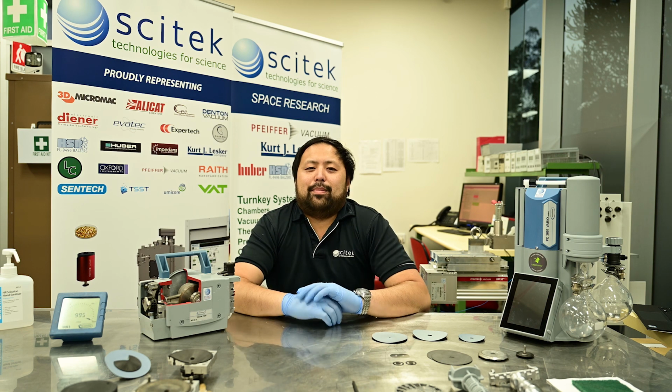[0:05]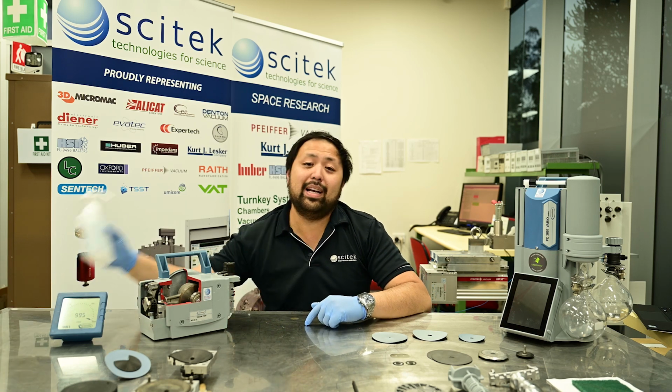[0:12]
I hope you are all keeping safe amongst COVID-19 and keeping plenty of hand sanitizer ready, just like we are.
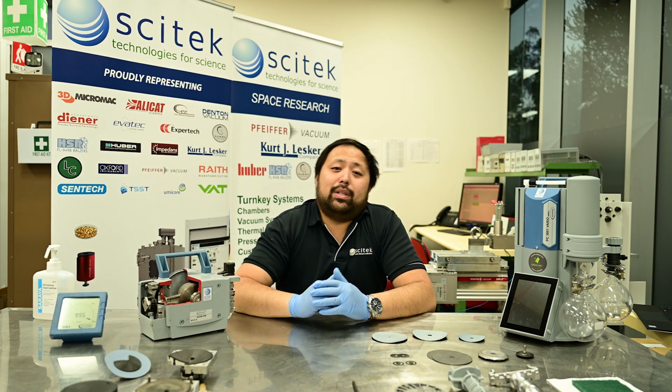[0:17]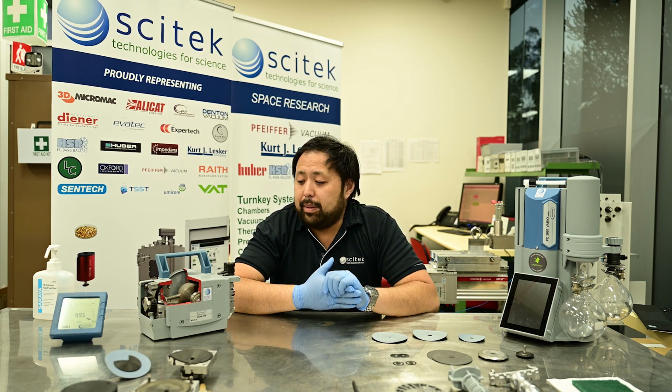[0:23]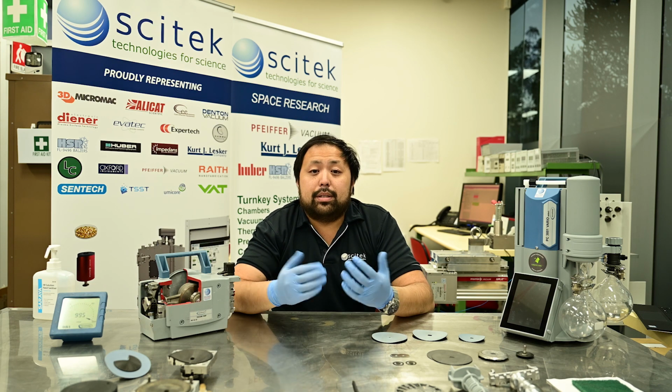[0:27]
Today, I'm going to be talking to you about diaphragm pumps. Now, these pumps are one of the most commonly used in the industry, and we see plenty of them in the service department. They're quite easy to service if you know what you're doing, so today I'm going to give you a few tips about servicing them, as well as just going through the different types of pumps you're likely to see in your lab.
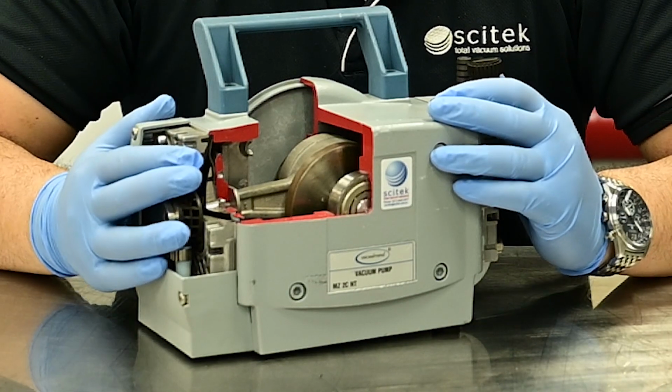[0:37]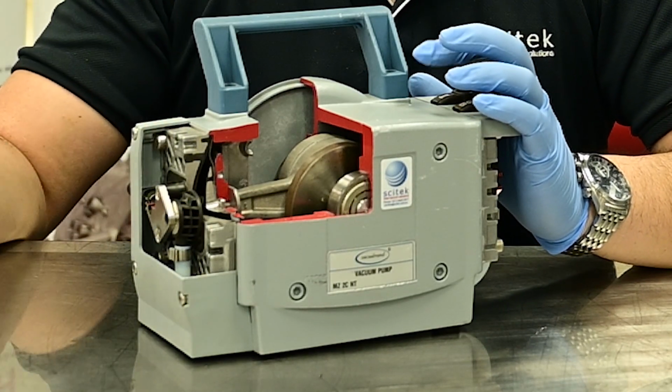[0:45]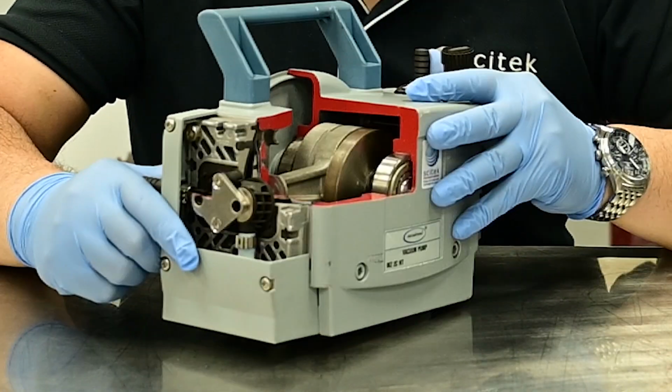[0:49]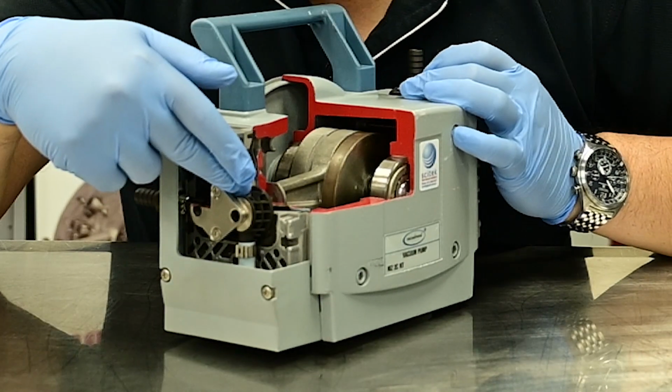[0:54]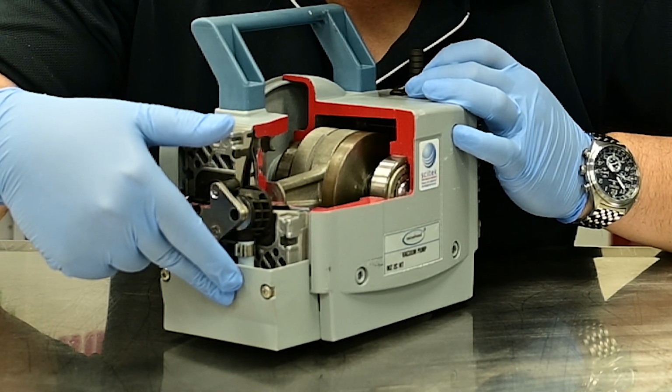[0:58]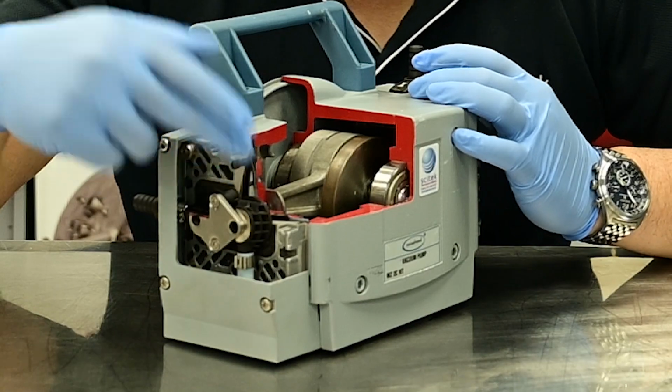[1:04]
So a diaphragm pump is very much like your car engine. It essentially has a reciprocating piston, which then pulls air in or other gases in and then pushes it out through the exhaust. Here I've got a cutaway model, which helpfully shows us how this all works. So down here, you've got your inlet diaphragm, your inlet valve, and then your exhaust valve behind here. These valves are essentially one-way valves, so they will only let gas flow through in one direction.
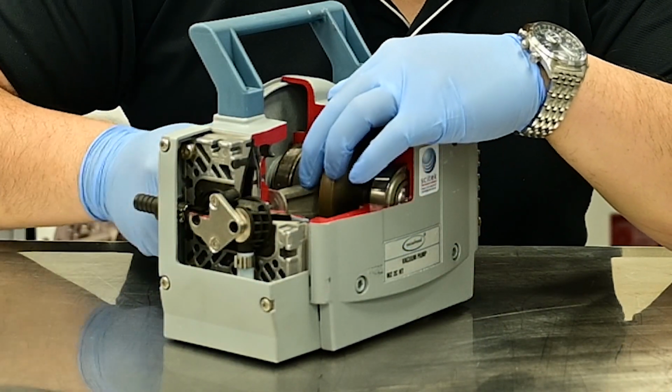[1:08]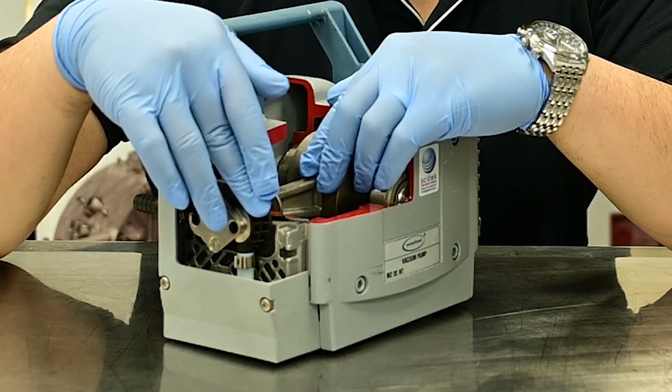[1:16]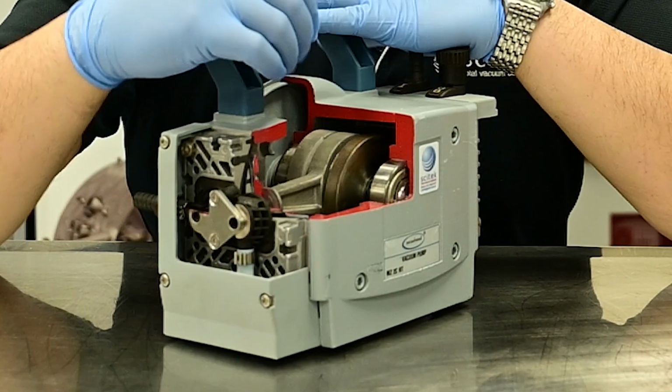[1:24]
So in a pumping cycle, the diaphragm will pull in, it will pull gas through the inlet valve, and then it will reciprocate back upwards, at which point the inlet valve will now be closed, and then the gas will pass through to the exhaust. Like a car engine as well, you can have multiples of these diaphragms in order to improve pumping speed as well as ultimate vacuum performance.
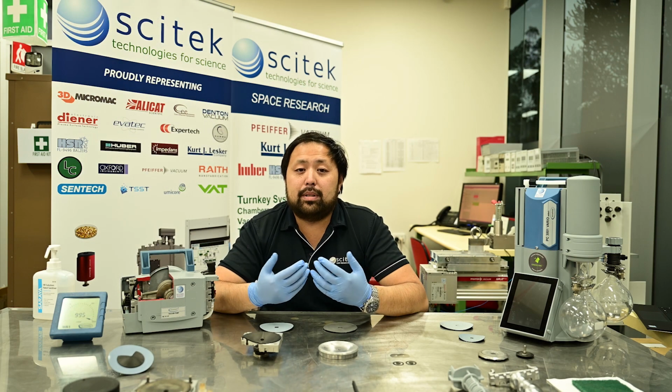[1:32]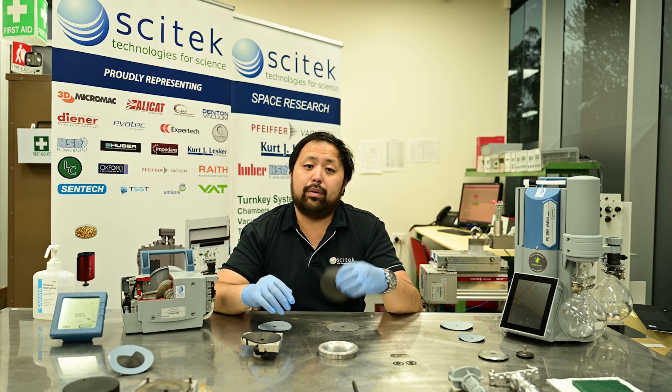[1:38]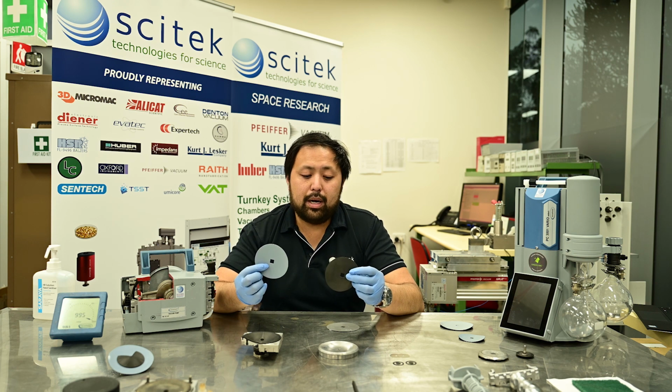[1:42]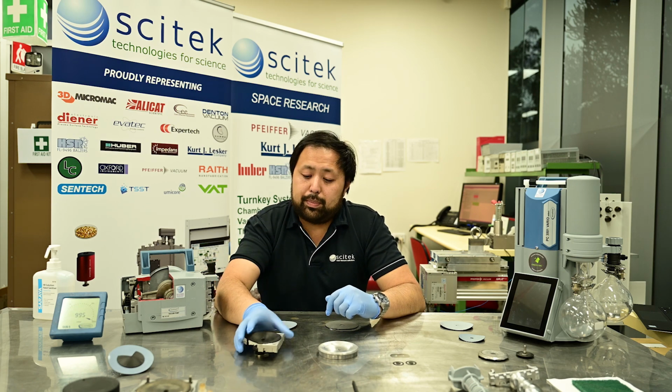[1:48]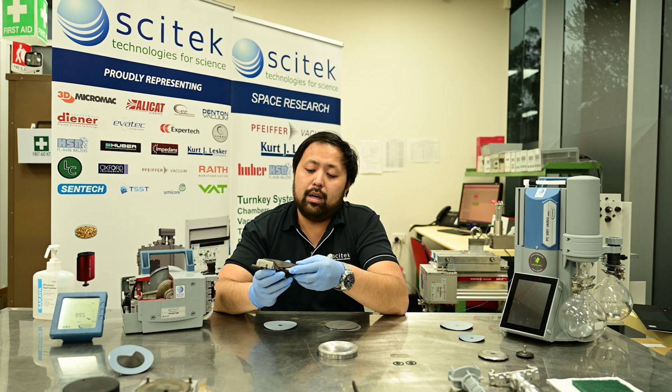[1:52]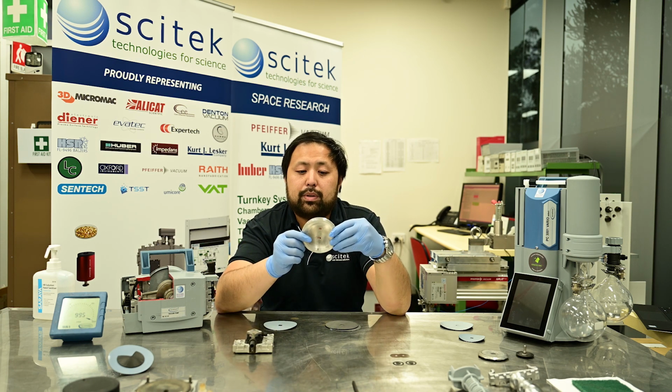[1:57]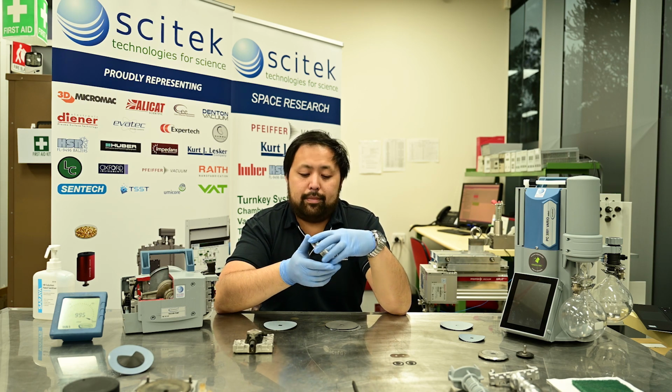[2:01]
Now, diaphragm pumps typically come in two distinct types. You've got your chemistry rated diaphragm and your non-chemistry rated diaphragm. Now, these two are the same shape and same size, but the chemistry one has got a PTFE coating on it. In addition to that, chemistry series pumps also have a polymer coated lining on the inside, which stops it from being attacked by chemicals and solvents. Whereas the non-chemistry, as you can see here, is just raw aluminium, so it would be subject to attack.
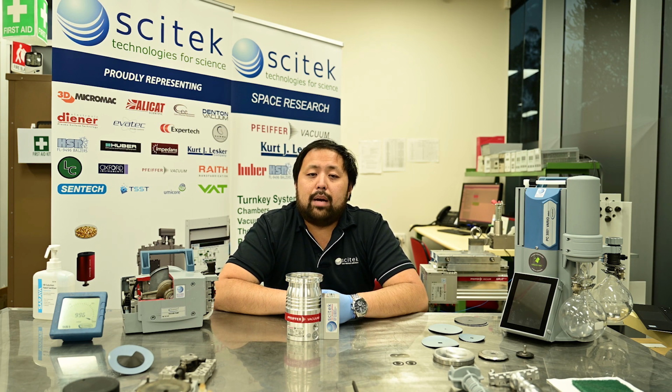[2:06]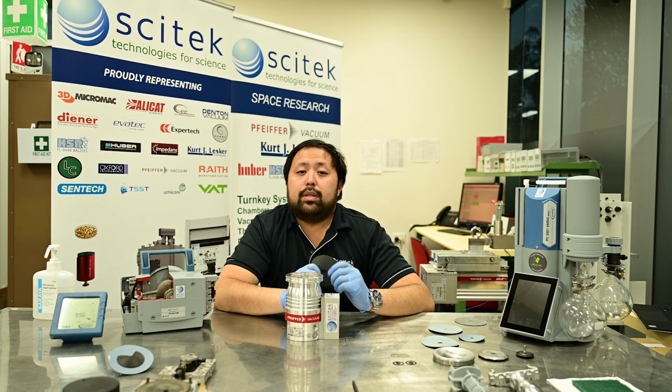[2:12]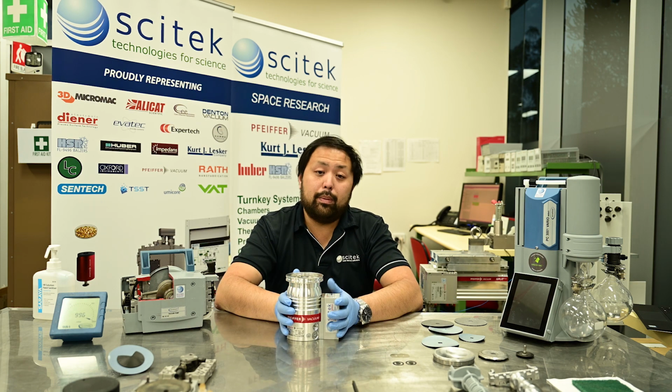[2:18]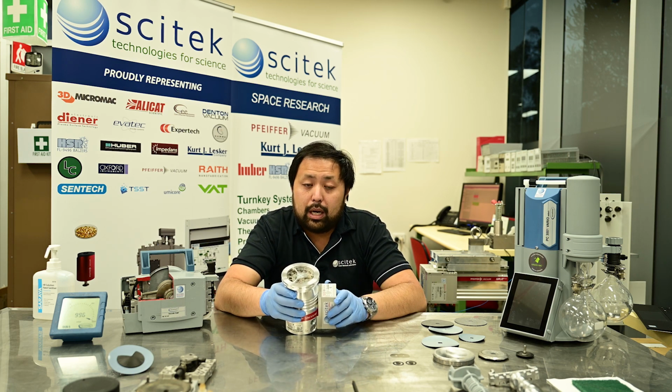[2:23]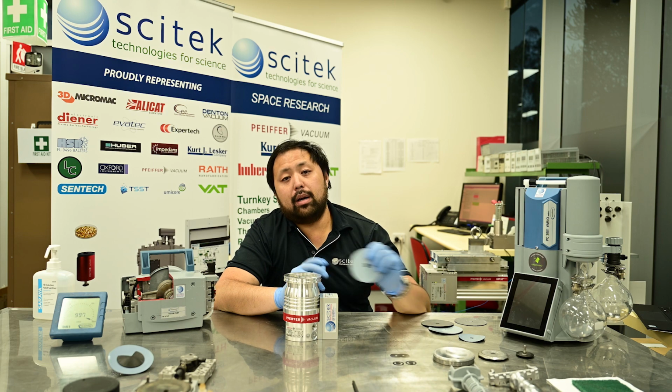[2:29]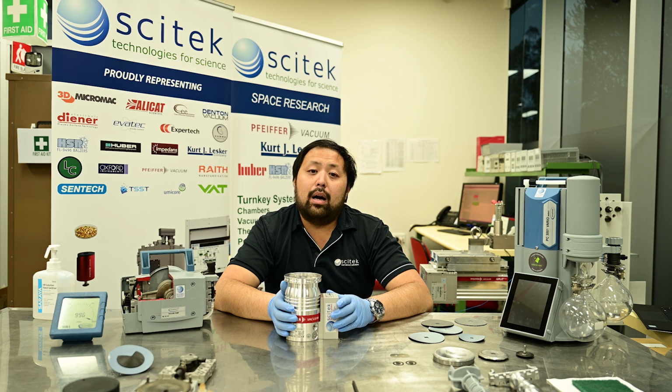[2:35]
Now, these two different types of diaphragm pumps have two very different applications that they can be used for. The non-chemistry diaphragms are best used in applications where they're not likely to see solvents or high levels of moisture, for instance, backing turbo pumps, and also for vacuum storage and for just clean chamber applications like space chambers. Now, your chemistry rated diaphragms, they are well suited for working with rotary evaporators, for filtration systems, for solvent purification systems, anywhere where they're likely to see high levels of moisture or chemicals.
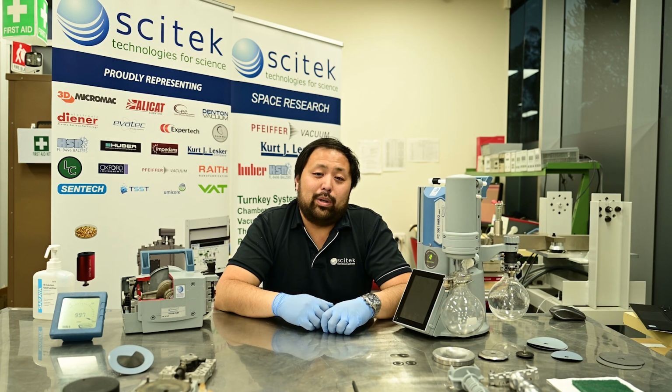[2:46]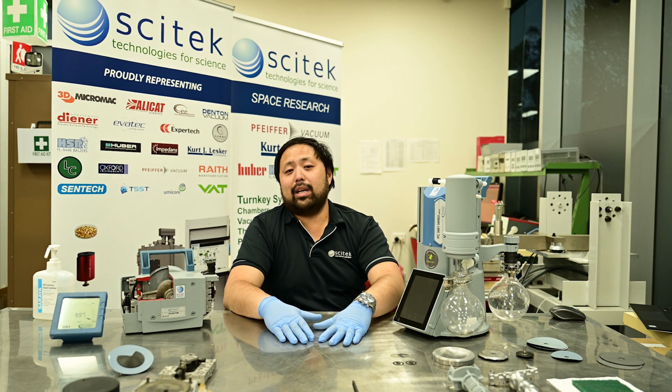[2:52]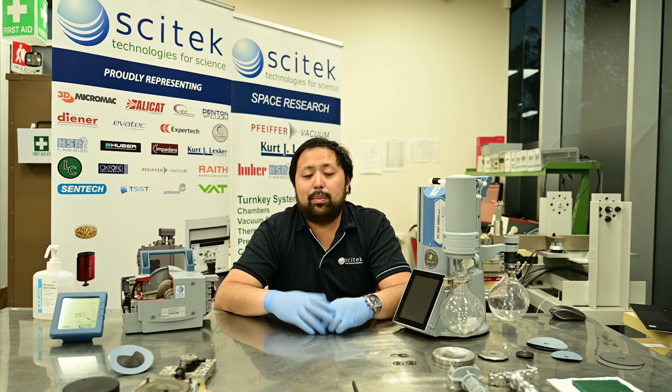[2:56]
So based on the fact that you're watching this video, I'm going to assume that you've got plenty of diaphragm pumps in your lab. One of the most commonly asked questions I get is, why is my vacuum pump not pulling down the way it was when I bought it new? What can I do to keep the performance going? So here are a couple of tips that I've got that'll help you make sure that your Vacuubrand pumps continue to work as well as they were on the day that you bought them.
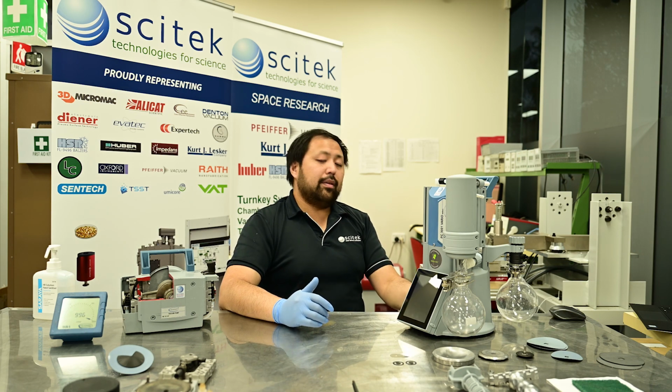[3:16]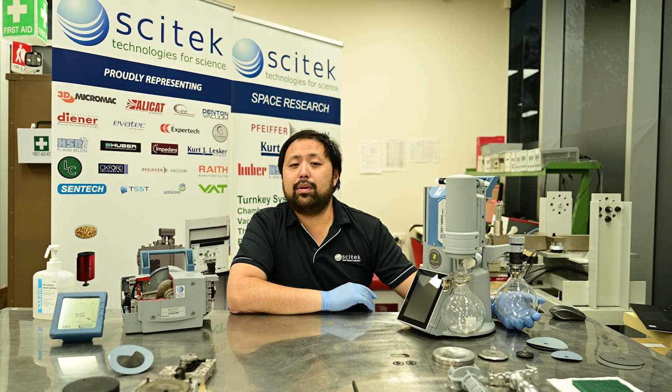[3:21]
Inlet traps are a helpful addition to your diaphragm pump, particularly if you're using it with chemistry. As you can see here from this PC3001 Vario, the inlet trap is essentially a glass flask that sits on the inlet. Now, what this does is that it traps any liquids or particles that might make their way through and into the pump. This stops the pump from getting damaged by liquids and particle ingress, and also improves the efficiency of the pump, as it means that the pump doesn't have to push through liquids and can just focus on pushing through the gases. Thereby, it is able to reach its ultimate vacuum much more quickly.
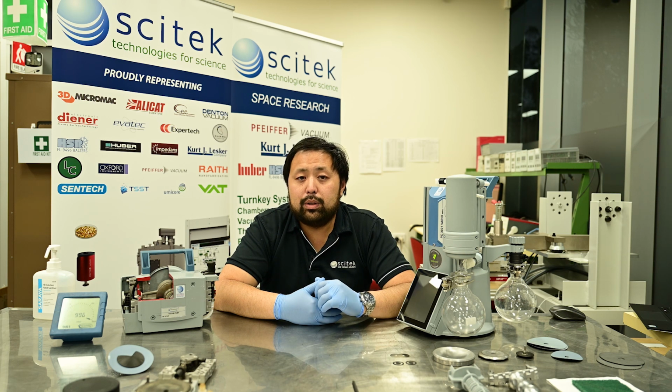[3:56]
Now, one commonly overlooked item which often causes issues with diaphragm pumps is the exhaust tubing. If your exhaust tubing gets blocked either by contamination or just by a simple kink in the line, this can cause undue stress to the rest of the pumping system, damaging diaphragms and possibly even tearing valves. So it's always worth inspecting your vacuum lines periodically to make sure that there is no blockage on the exhaust, and this will help your pump work at its best efficiency.
Now, I know it's tempting to go in, turn on your rotary evaporator and start running your pump straight away, but one really important thing that you should always do is to run your vacuum pump for at least 30 minutes prior to starting your application.
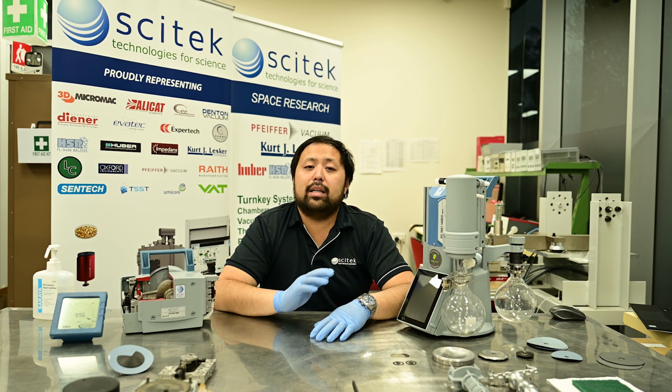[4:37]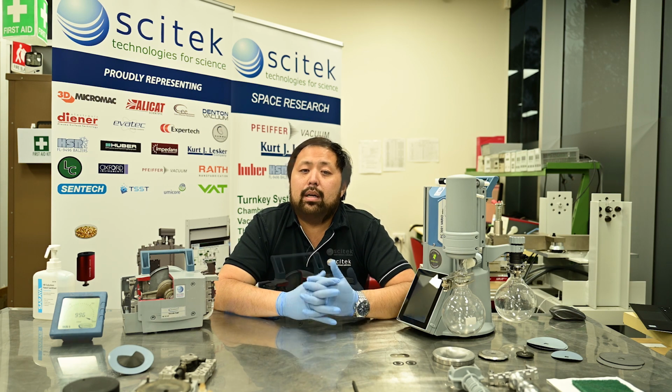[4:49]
What this does is that it warms up all the internal surfaces of the pump, which means that chemical vapors are less likely to condense on the surfaces and damage the surfaces. Additionally, if you run the pump for 30 minutes after your application, this will have a self-cleaning effect and therefore also help remove anything that might have ended up inside the pump.
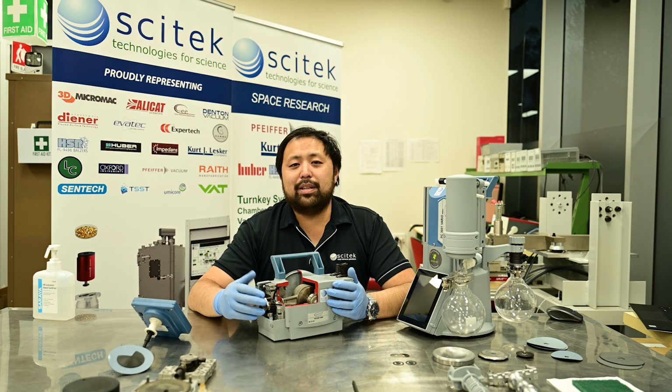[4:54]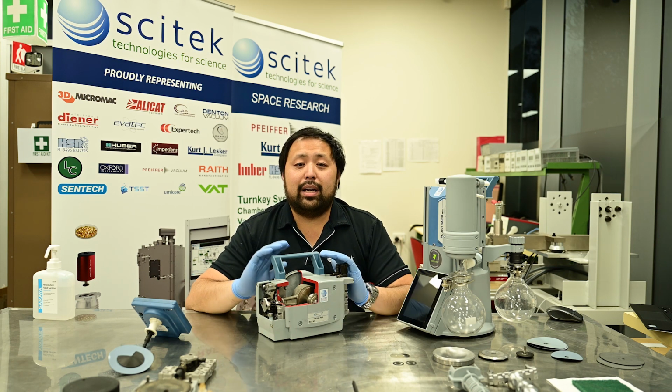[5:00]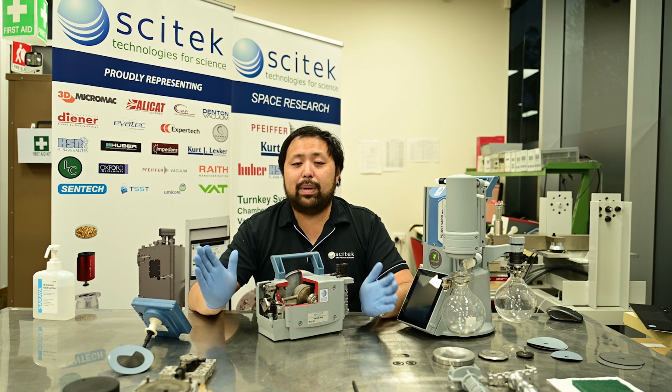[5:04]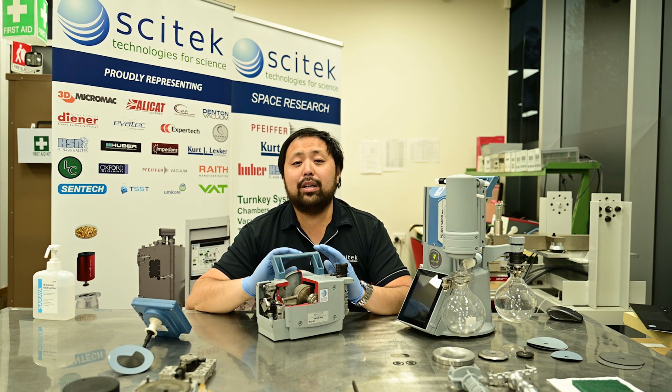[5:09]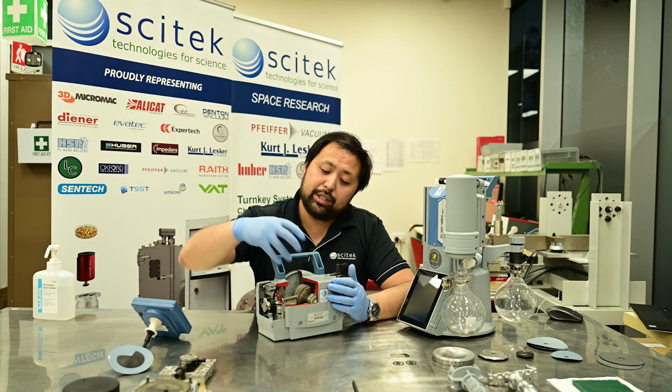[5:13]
Diaphragm pumps, like your car, require regular maintenance and inspection to ensure that they can continue performing at their best. I know it's very easy to just ignore them, leave them underneath your fume hoods, leave them underneath your benches, and assume that they'll run forever, generating infinite vacuum. But what actually happens is that they break down and allow solvents and chemicals to leach into the spaces in here, which can cause irreversible damage to your pump.
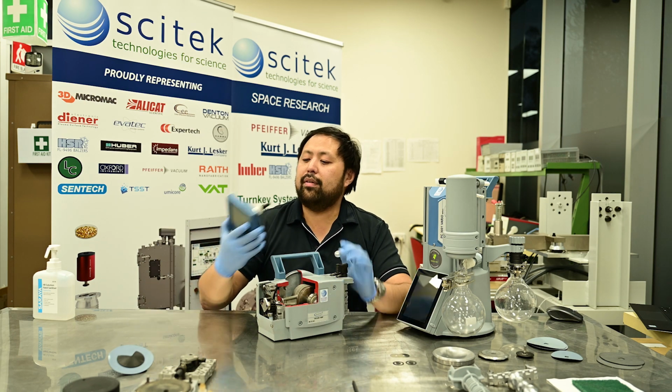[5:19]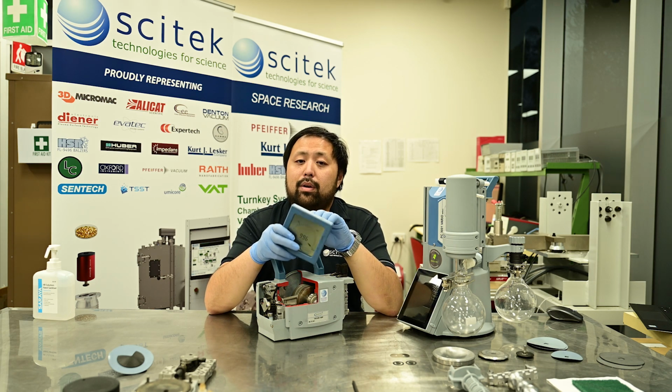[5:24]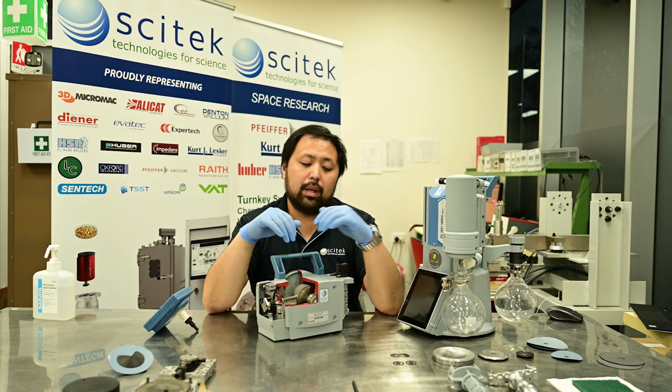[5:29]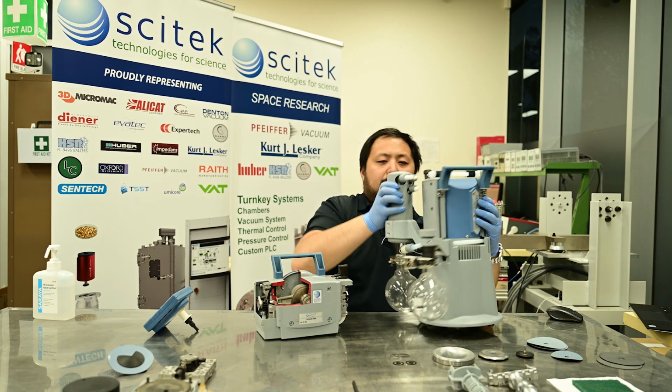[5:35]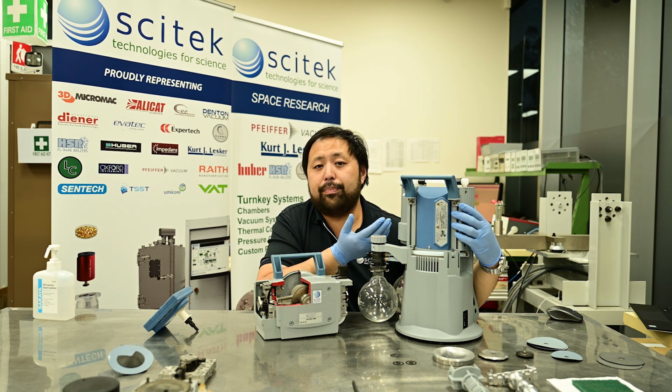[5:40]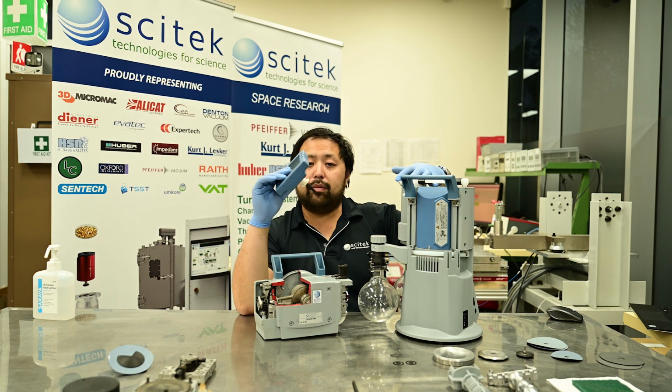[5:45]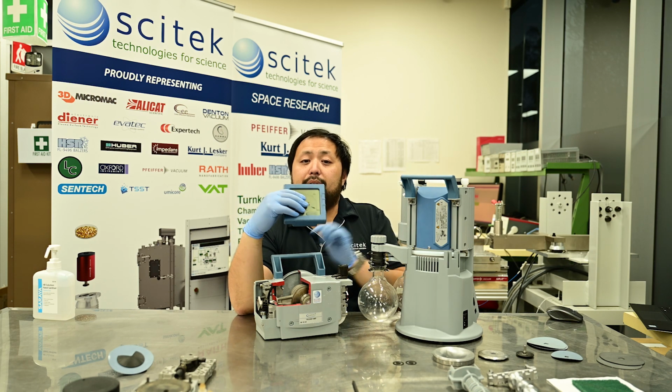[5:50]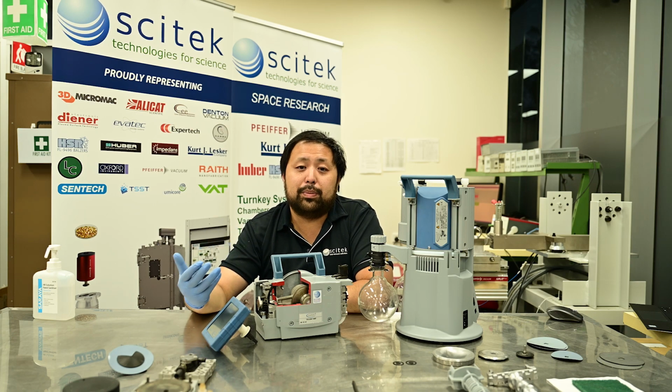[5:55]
It's always important to have a vacuum gauge, as this is the easiest way to determine how healthy your vacuum pump is. Now, with all the Vacuubrand diaphragm pumps, they will have a label on the front of them, like here, and over here, which will show you what the specification is for the ultimate vacuum. The easiest thing to do is to connect up your vacuum gauge onto the inlet of the pump, run the pump, and see if it is able to reach its ultimate vacuum. If it can't reach this ultimate vacuum, then it means that you've got a problem and that you need to address it as soon as possible.
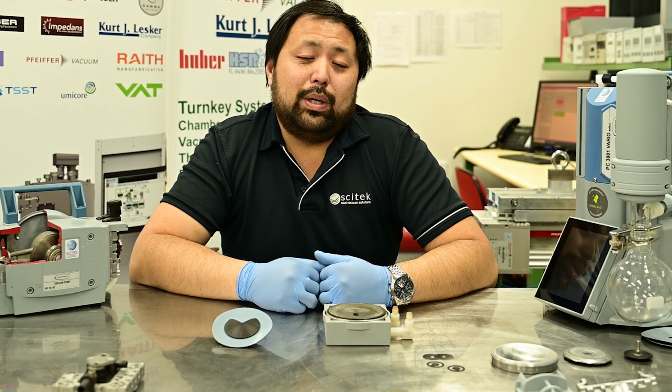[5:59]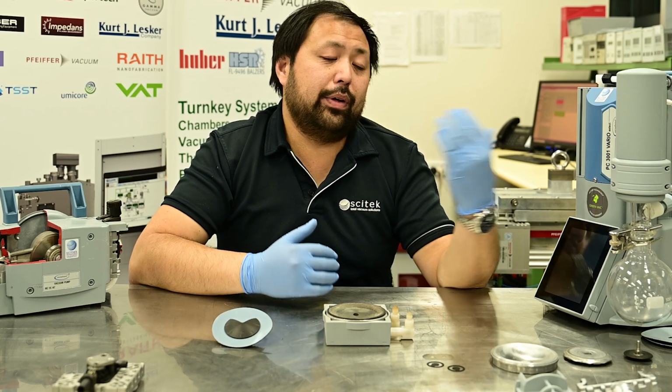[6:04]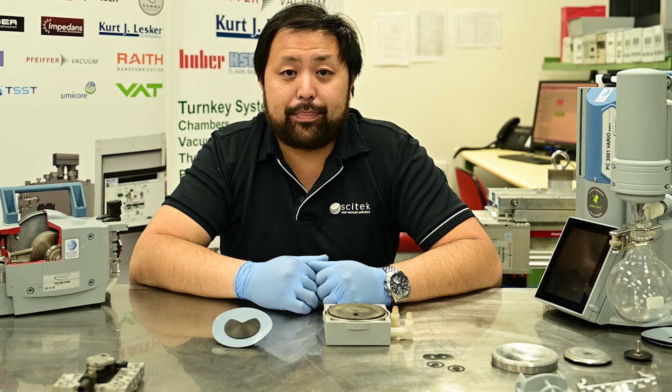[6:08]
So your pump isn't reaching ultimate vacuum. What can you do? Well, I can sell you a new pump, but that's probably not the most economical way to go about spending your lab's money.
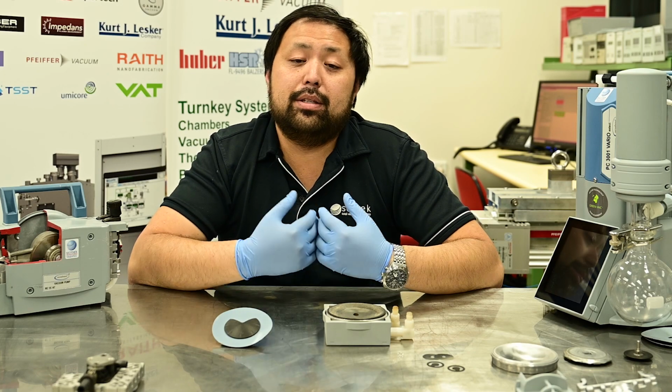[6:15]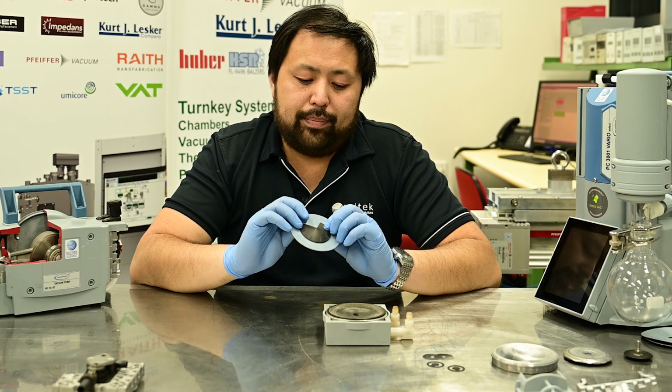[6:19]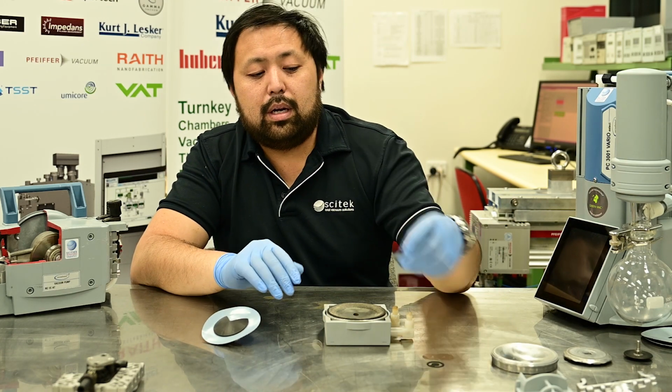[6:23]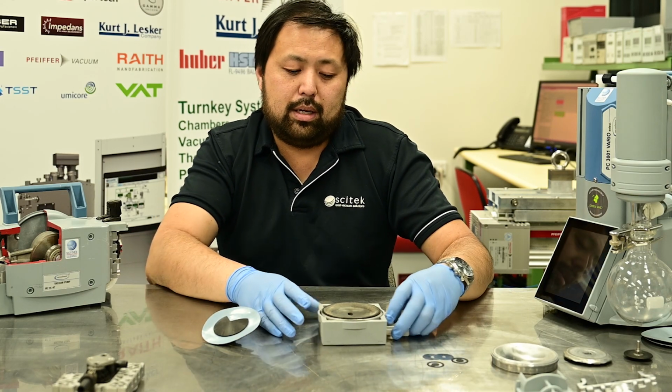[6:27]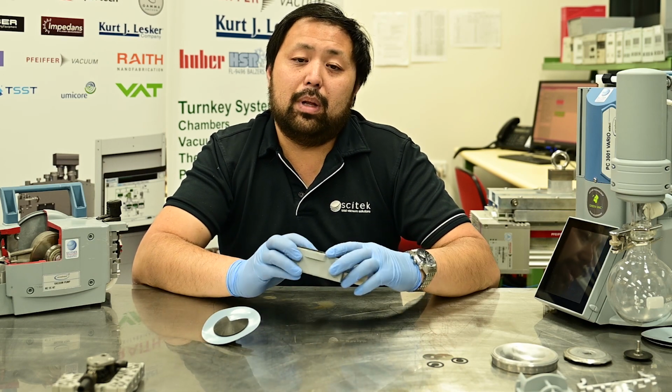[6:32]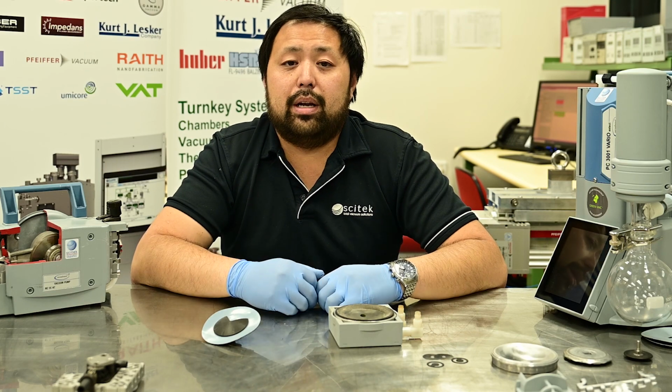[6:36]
Now, firstly, we need to identify what could cause the lack of performance. And this is usually generated by a few things. One, tears in your diaphragm. Two, torn valve. Three, blockages in your vacuum connections and vacuum lines. Or four, your pump is simply just dirty on the inside, which fills up the headspace and causes the pump not to work efficiently.
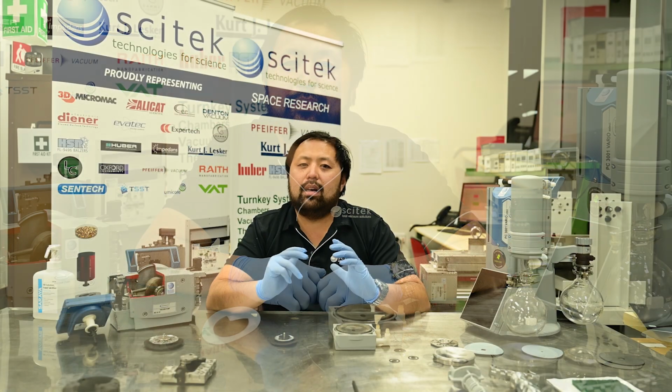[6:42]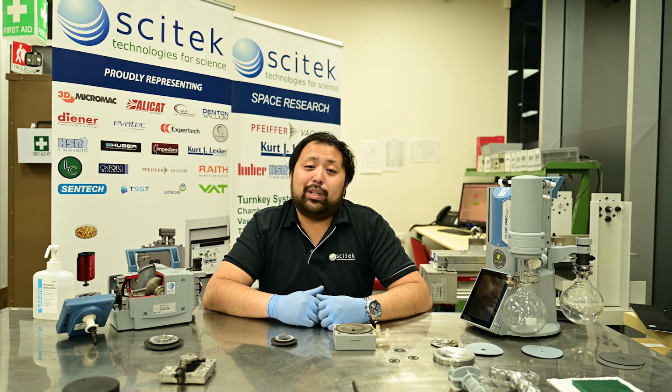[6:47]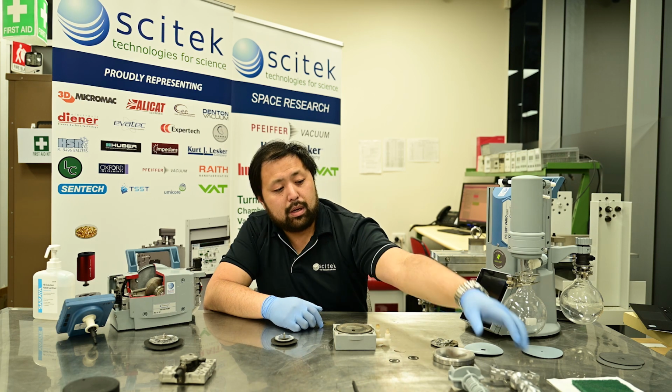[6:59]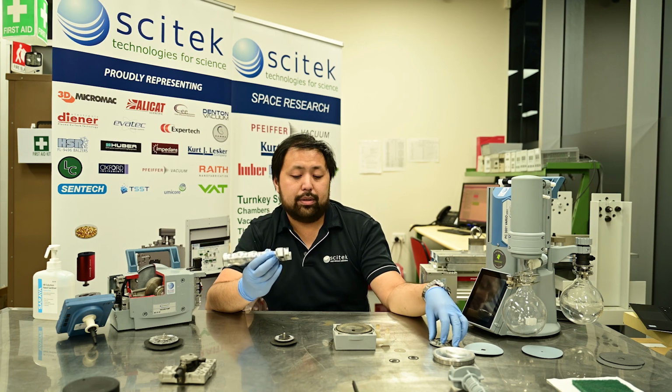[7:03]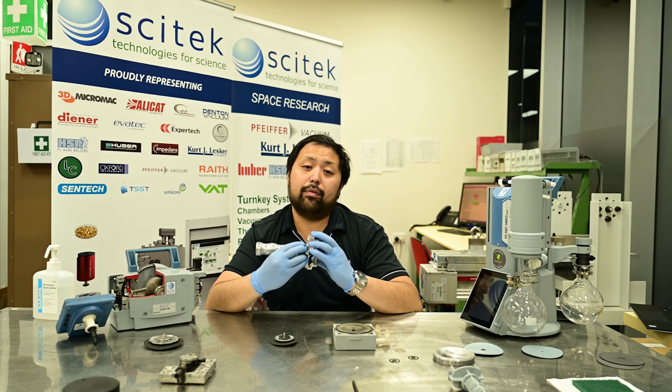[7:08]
Now we finally reached the part of the video which I'm guessing is why you started watching in the first place. How do you service your diaphragm pump? Servicing diaphragm pumps is not particularly complicated. It just takes a little bit of time and patience and a couple of tools. For starters, you'll need a diaphragm wrench. Now this goes around the outside of the backing plate of the diaphragm and allows you to remove it from the head.
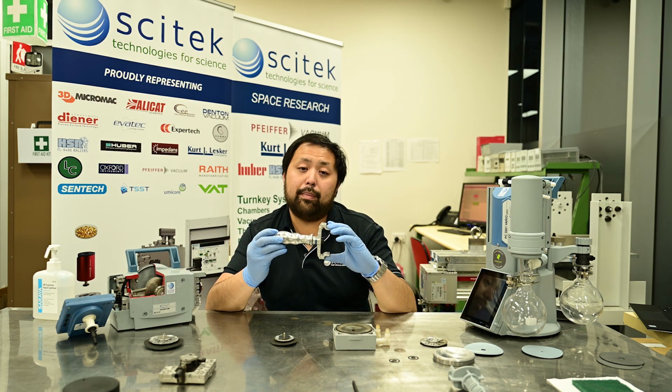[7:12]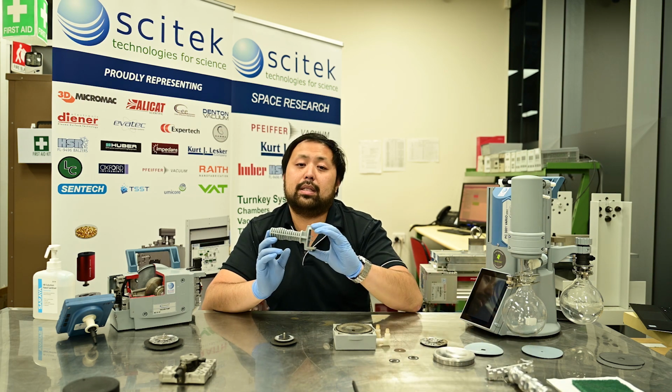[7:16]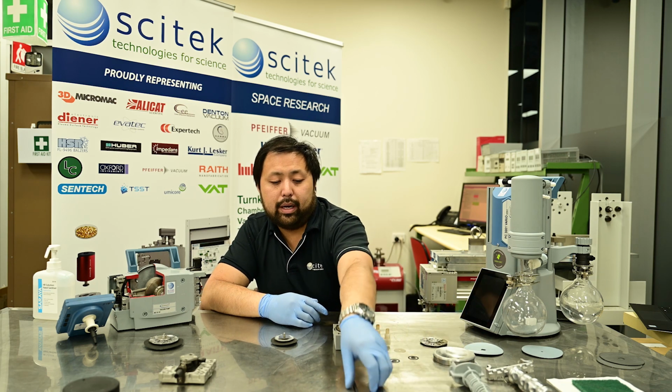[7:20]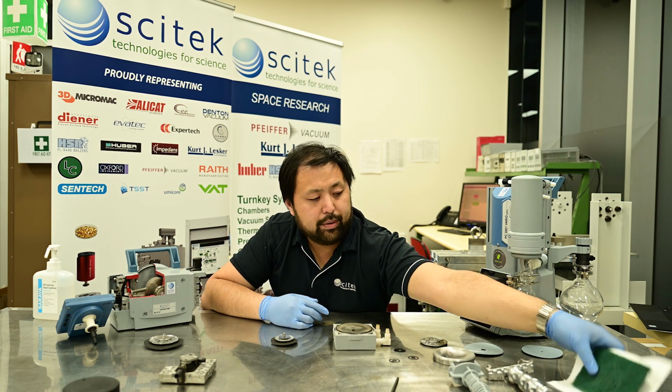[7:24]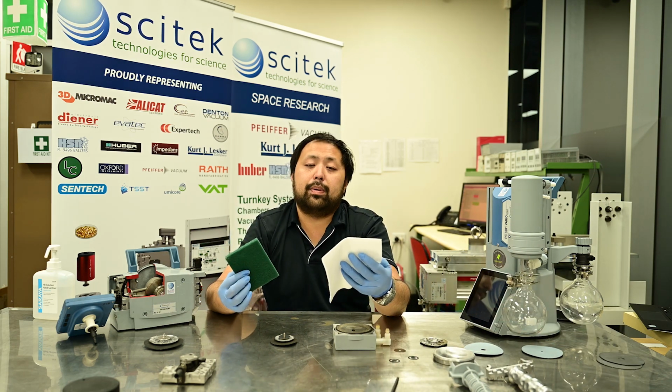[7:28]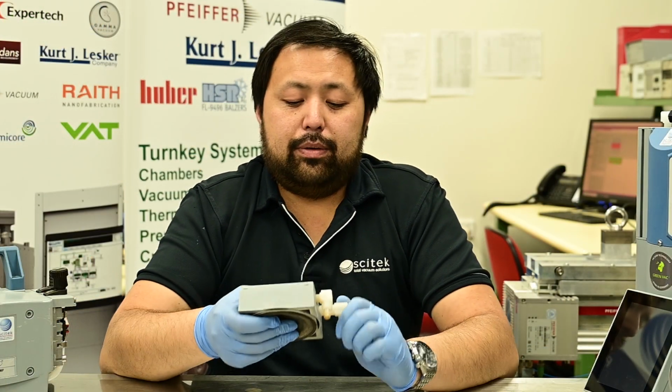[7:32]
Now they come in both a metal type for the larger pumps and a plastic version for the smaller pumps. Other tools that you might need are the Allen key and also some lint-free towels and some Scotch-Brite. On the older style pumps, at this point you'll need to remove the vacuum fittings in order to give you access to the valves.
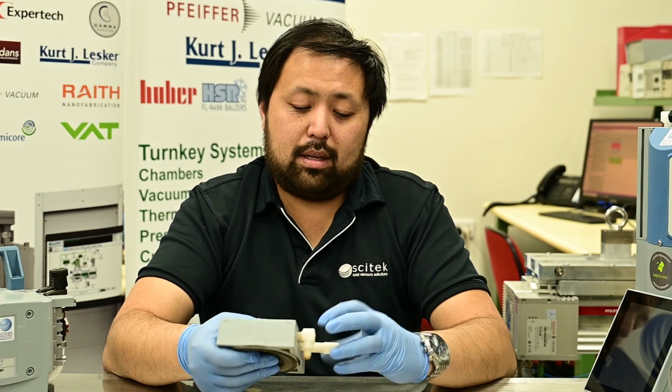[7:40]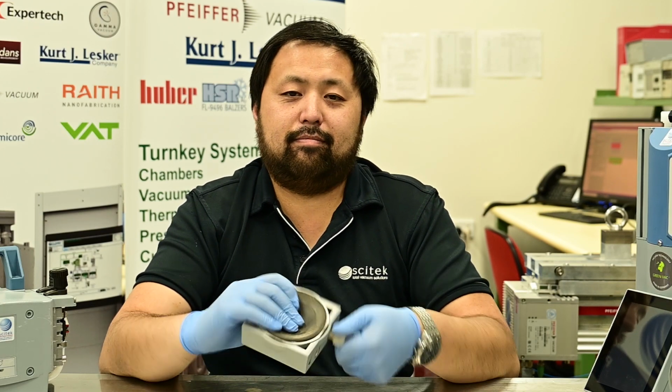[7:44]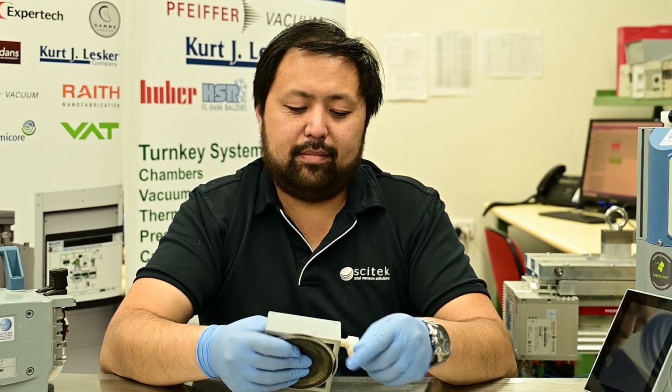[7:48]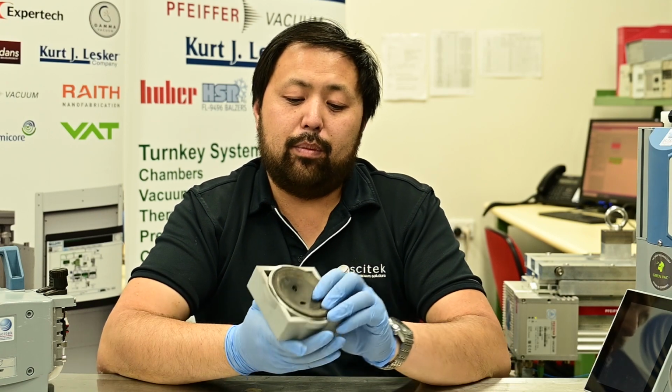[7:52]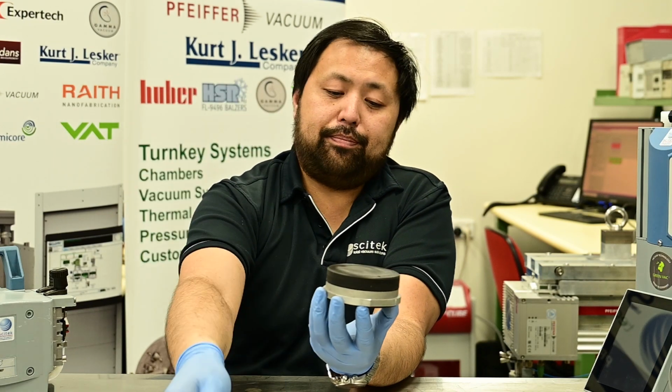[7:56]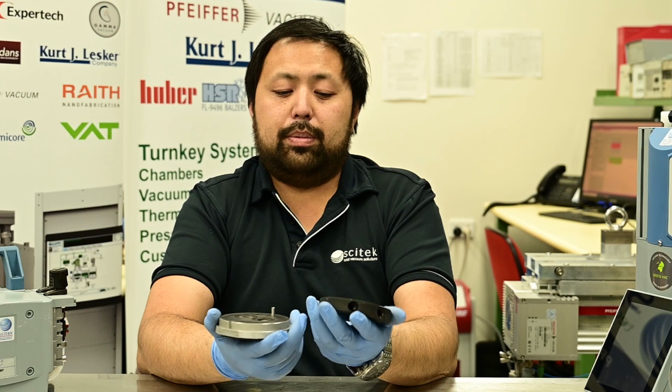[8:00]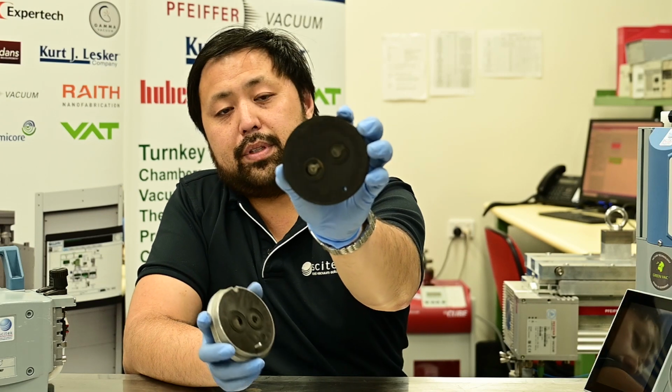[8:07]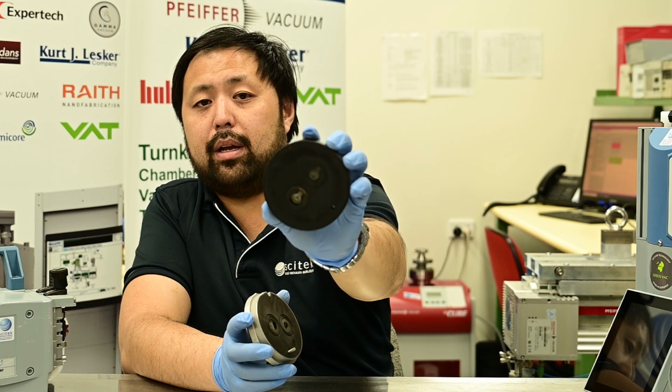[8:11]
Now it's always important to keep track of which fitting came from where. When those fittings are off, you can remove the cover and then you can separate the two plates of the head. As you can see here, this is a pump that is requiring service. You can see the valves are used and you can see that they've actually deformed quite significantly. Once you've removed the valves,
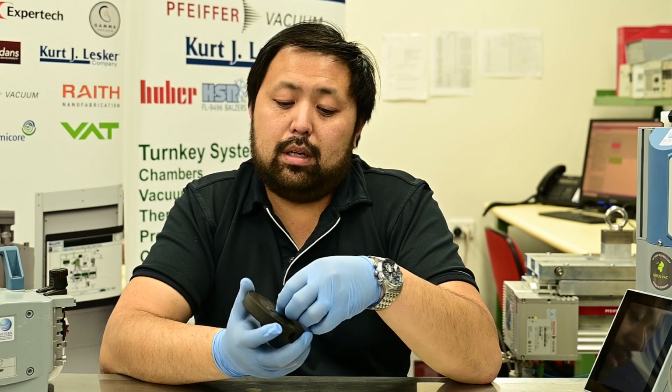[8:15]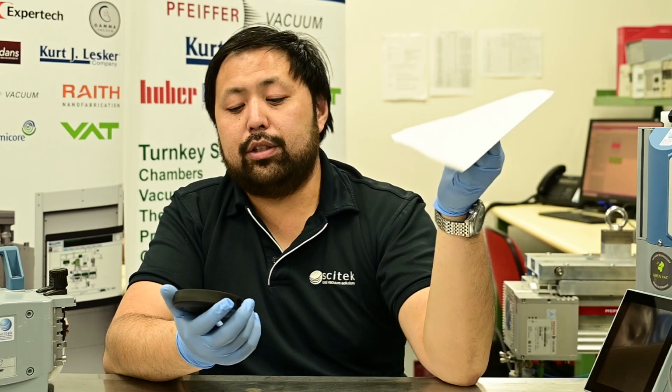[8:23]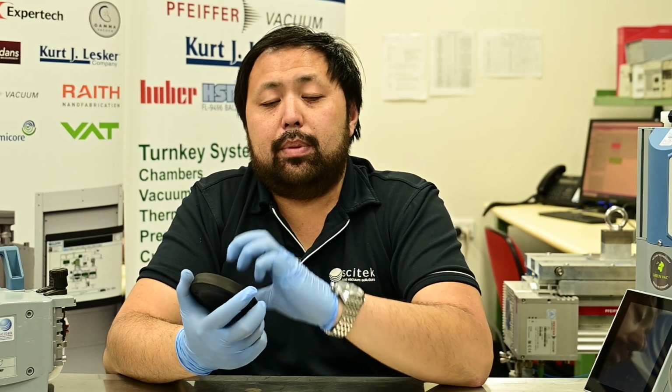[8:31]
you can give the entire surface here a clean with some isopropanol. Now, it's best to start off by using just a paper towel to wipe it off, and only when you get to a point where you've got hard deposits, then to use the Scotch-Brite. It's important to use the Scotch-Brite gently because you do not want to damage the surfaces.
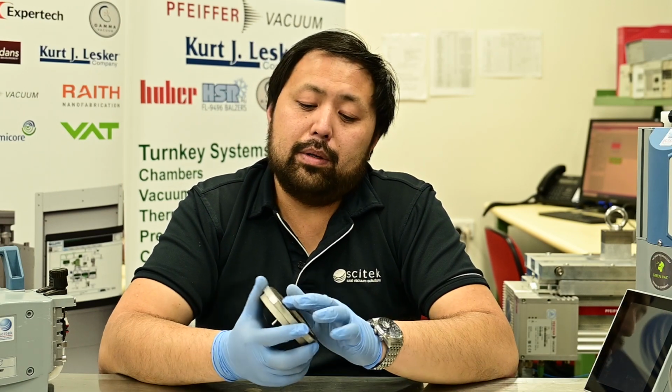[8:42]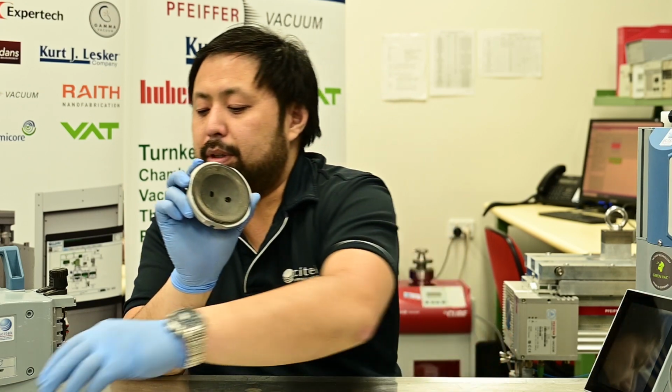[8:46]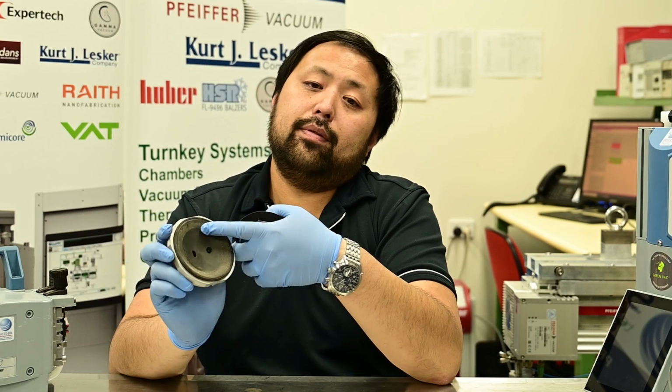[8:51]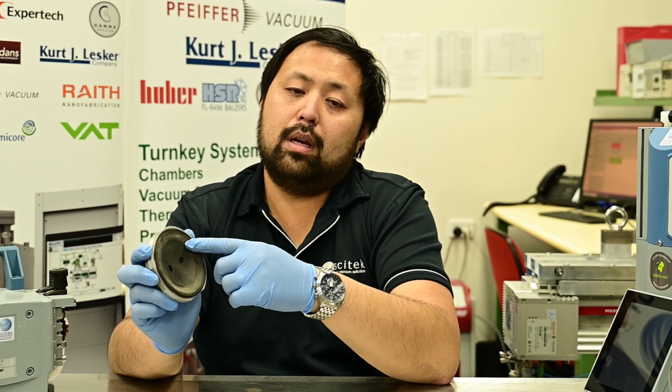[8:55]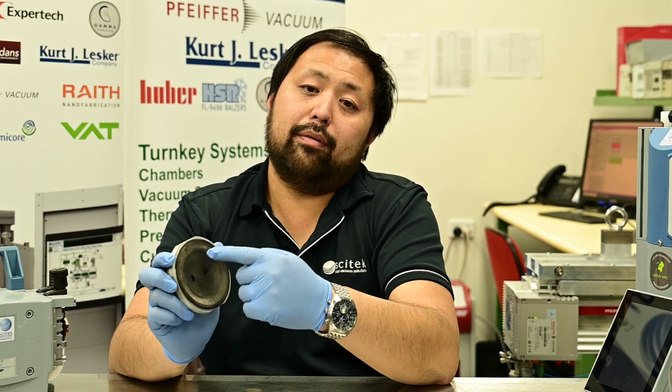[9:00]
Now, a common area for deposits is on the inside face of the head. Now, this is the face which makes contact with the diaphragm. So you can see from this one that you get a lot of residue on the inside face. One other thing to also check is that these inlet and exhaust ports are clear and free from any debris.
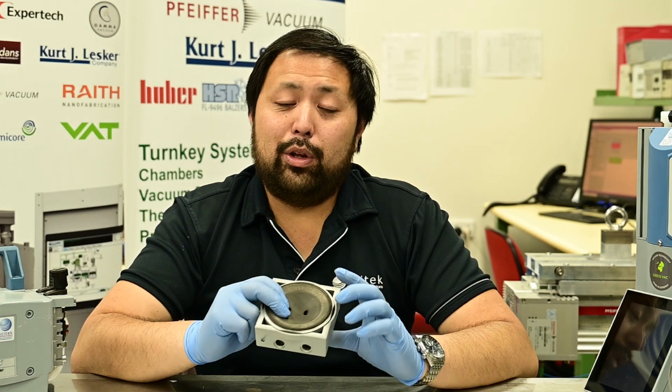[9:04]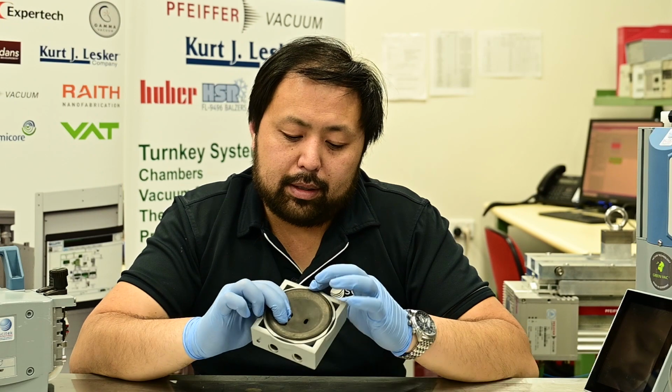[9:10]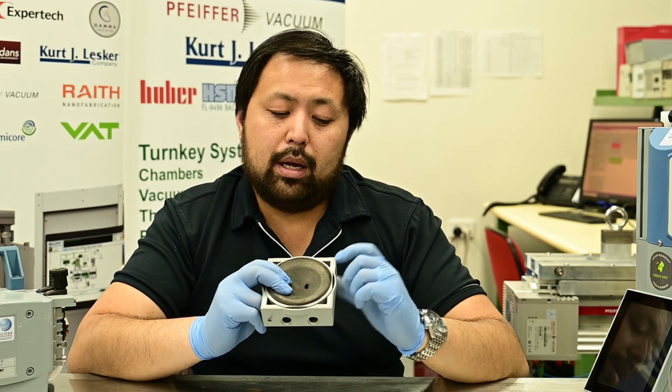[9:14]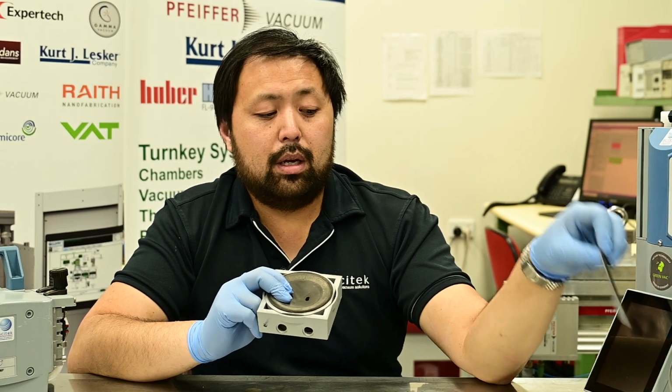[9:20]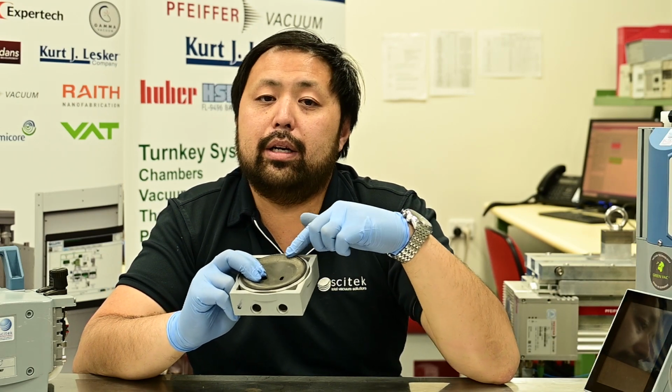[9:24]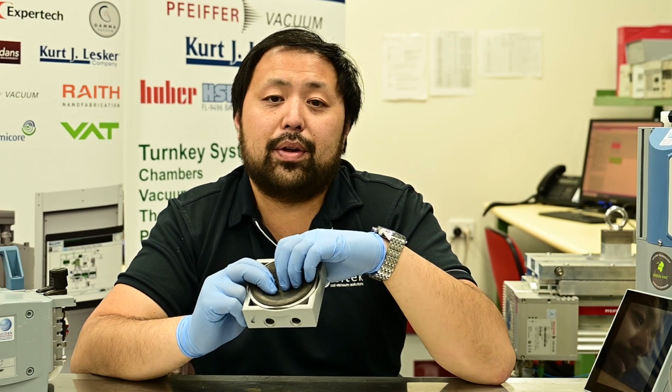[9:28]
One thing to remember when you're cleaning the pump, particularly if it's really dirty and you need to get at it with the Scotch-Brite, is this slight ridge you see on the outside ring of the head. This ridge is actually what clamps onto the diaphragm and creates the vacuum seal. So when you're trying to clean this area, make sure you do not damage that or polish that area too much. Otherwise, your pump will leak and it won't be able to achieve its ultimate vacuum.
Once you've got the tool engaged in the backing plate of the diaphragm, you can rotate counterclockwise.
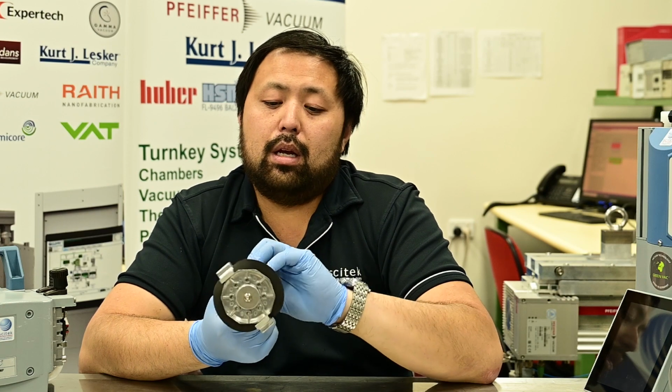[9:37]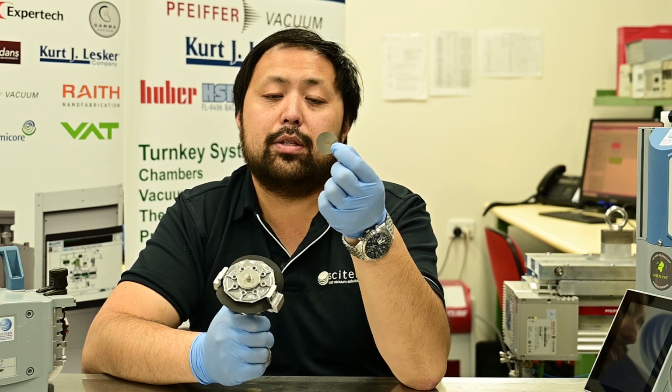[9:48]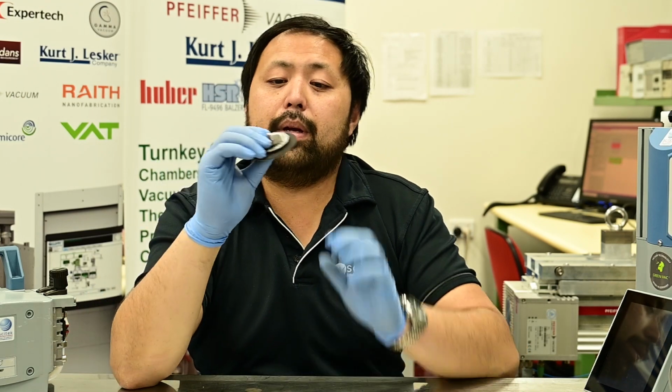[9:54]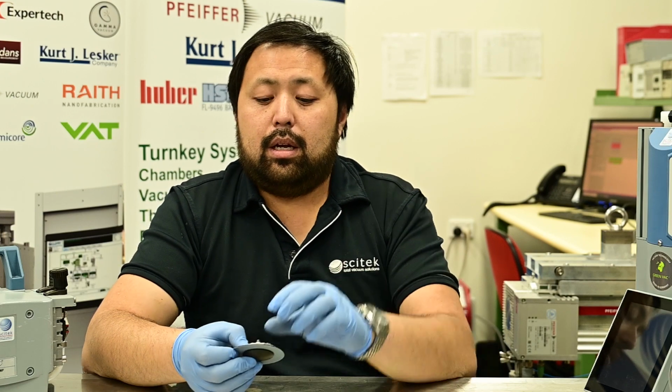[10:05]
When you have it off, just ensure that you retain the spacers. Most pumps will have at least one or two of these very thin spacers to allow the adjustment of the clearance of the diaphragm to the head. Now that you have the diaphragm off the pump, including the spacer, you can remove it by taking the spacer off. Now these are unique, so you need to keep track of how many are behind each head.
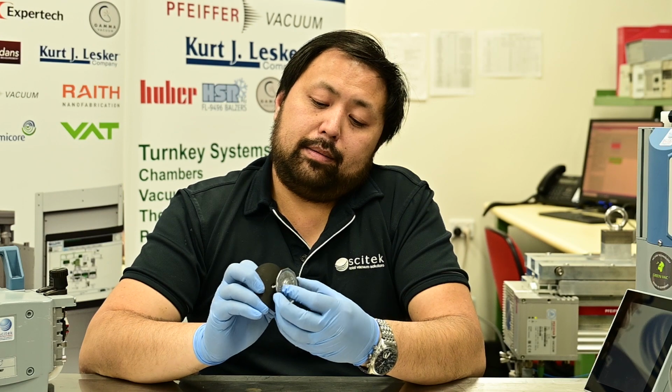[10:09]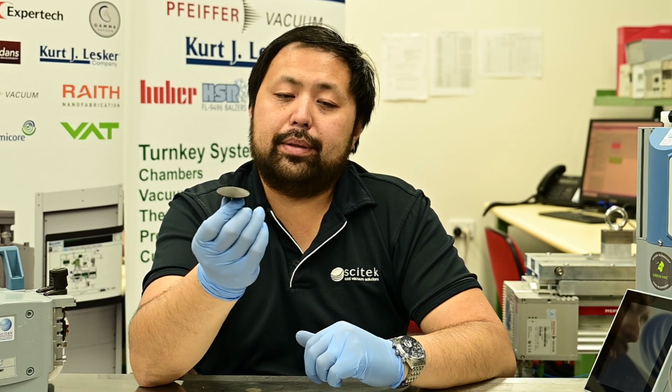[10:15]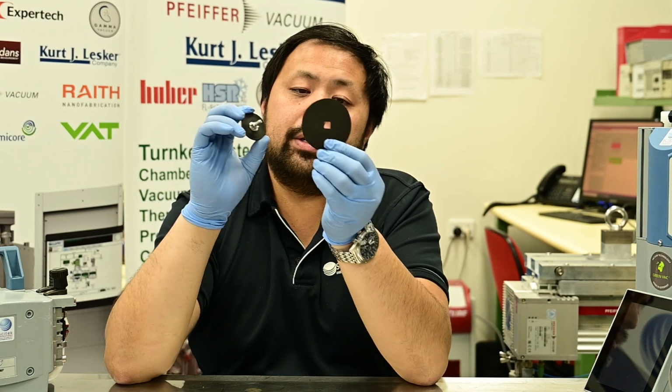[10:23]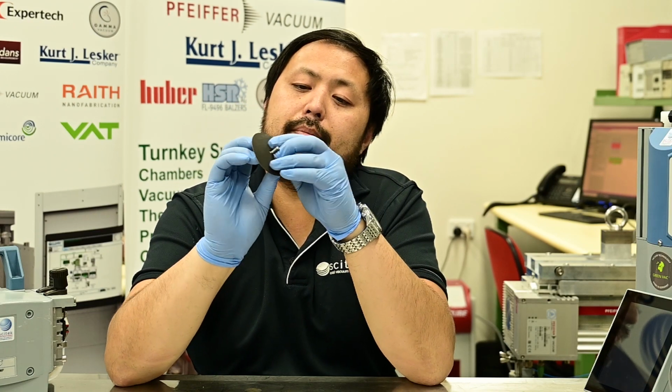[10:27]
Then you need to remove the backing plate. And then you can take the diaphragm off, and then you've got the clamping disc as well. Now after you've given all these parts a good clean, grab your new diaphragm and put it back on, noticing that it's got a square cutaway that matches with a square block here.
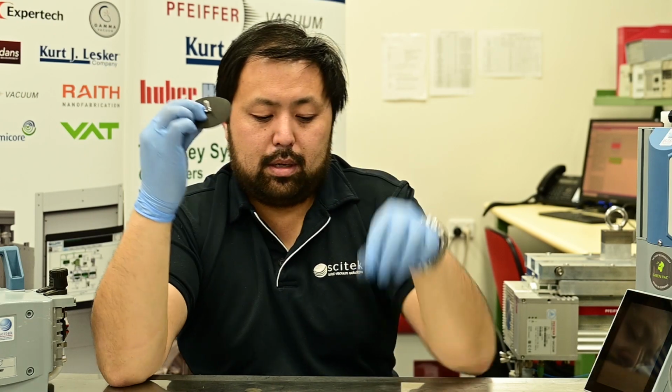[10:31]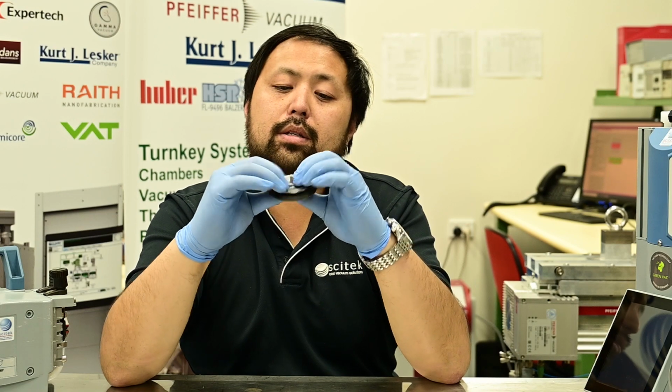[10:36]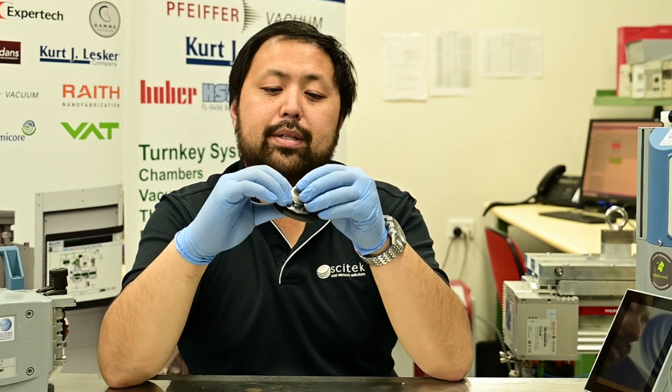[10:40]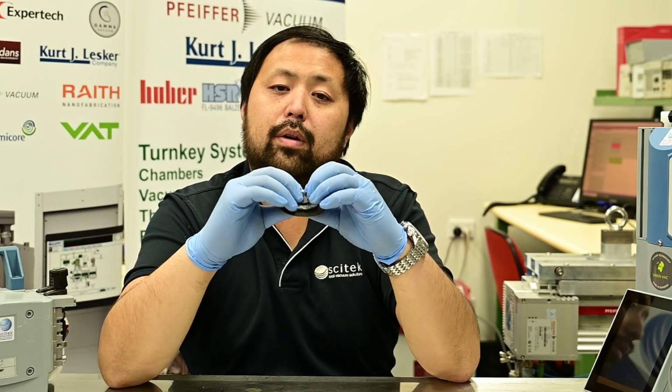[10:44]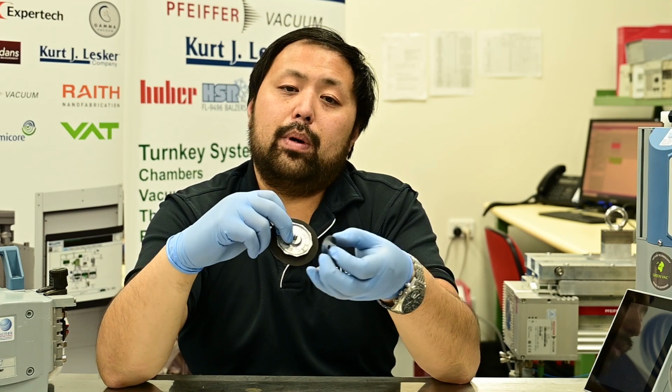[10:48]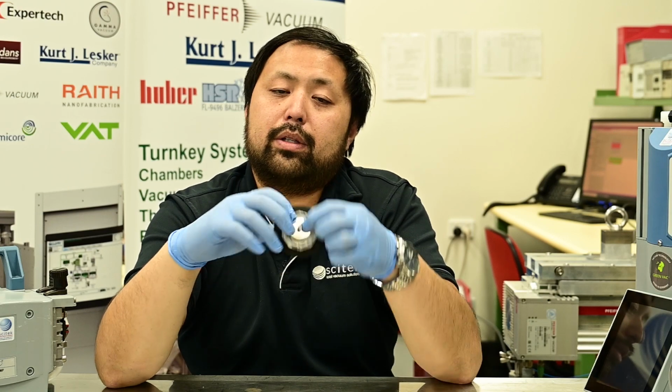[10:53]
Clamping disc then goes on so that it all mates nice and flush. And then do not forget your spacer. And then you can screw this back onto the con rod. What can sometimes help is if you put a dab of isopropanol or ethanol, as this will help to keep the spacer in place while you're screwing it back onto the con rod.
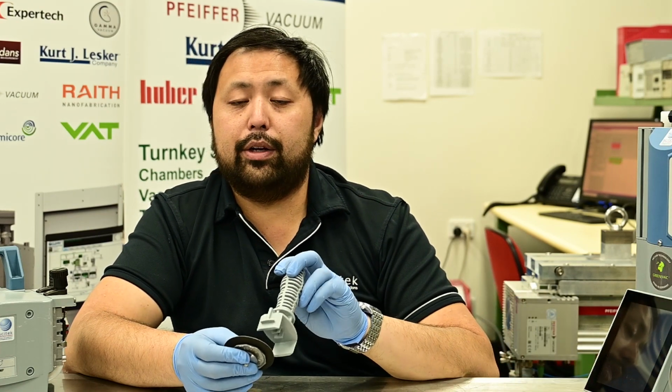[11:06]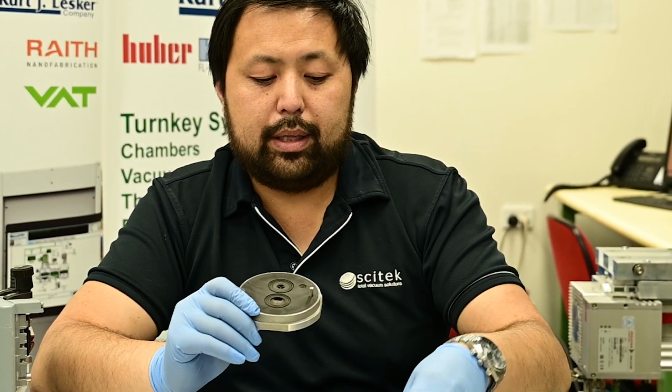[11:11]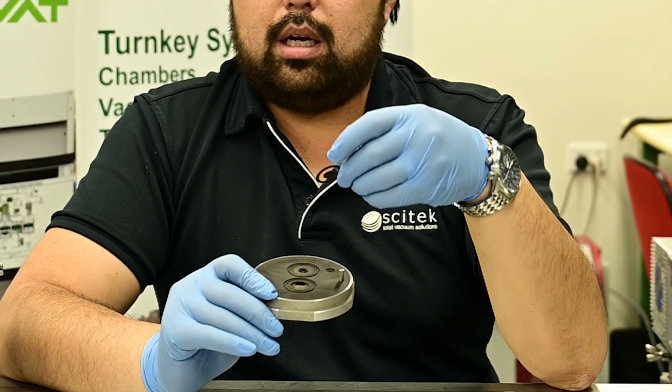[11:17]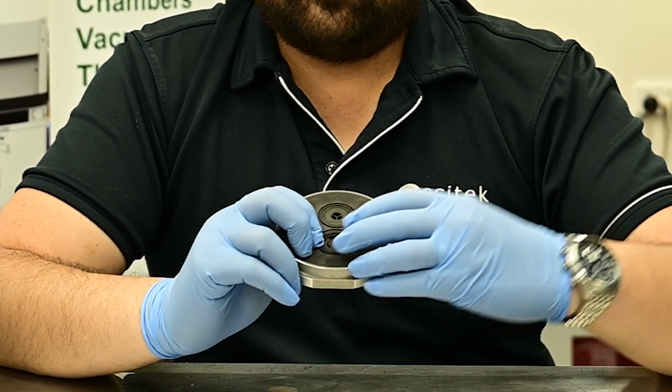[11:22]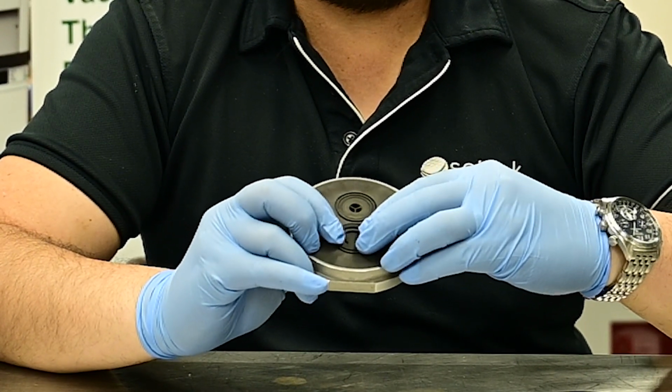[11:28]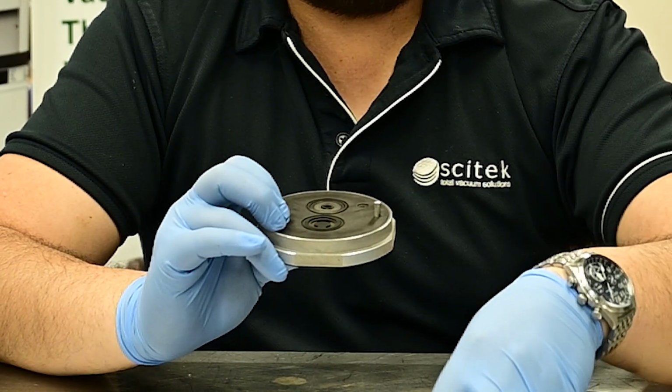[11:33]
When screwing this back on the con rod, you can start it off by hand, but then you can do the final tighten using the tool, similar to when you're undoing it. Now, when installing your valves, you need to make sure that the tab on the valve is aligned correctly with the seat. You want to make sure that that flat tab is away from the opening, as this will protect it from damage. The valves need to be seated on that inner ring, like thus.
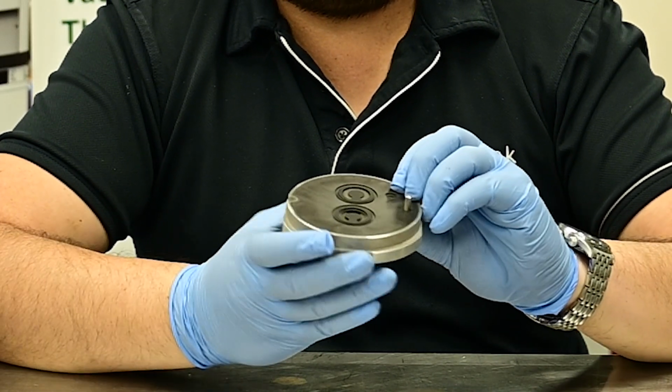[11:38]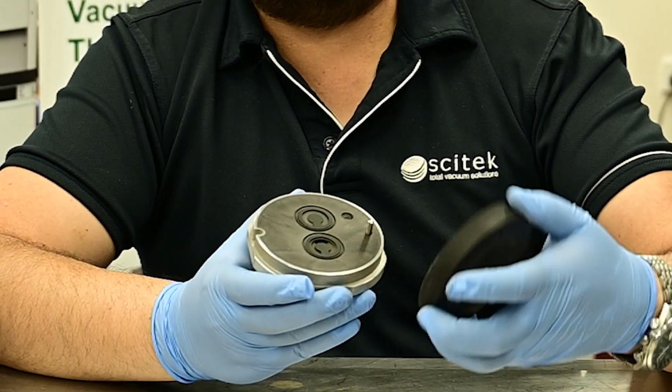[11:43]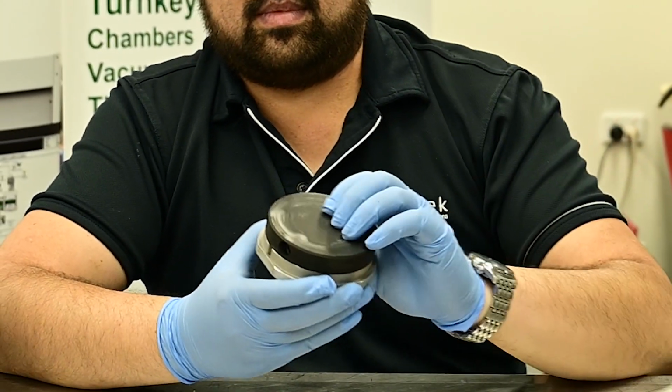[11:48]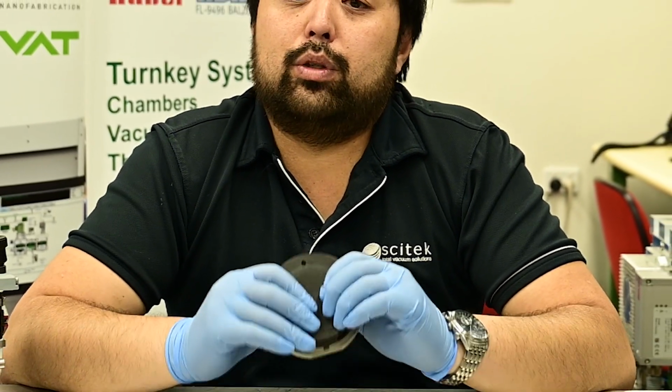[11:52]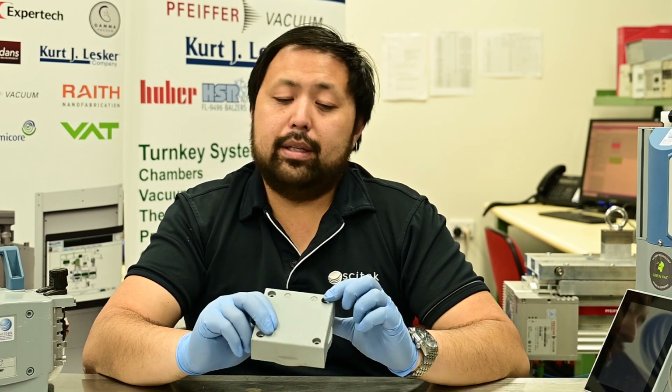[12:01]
And with this plate, there is an alignment pin which allows you to make sure that it sits in the right position. What you can also do is put a small drop of isopropanol on the valve, which will also stop it from moving around as you're reinstalling it back onto the diaphragm pump. Now, once you've got your head completed, it's important when you're putting the head bolts back on that you tighten them evenly. Don't just tighten one side at a time, because otherwise you can cause a levering force which can damage the pump.
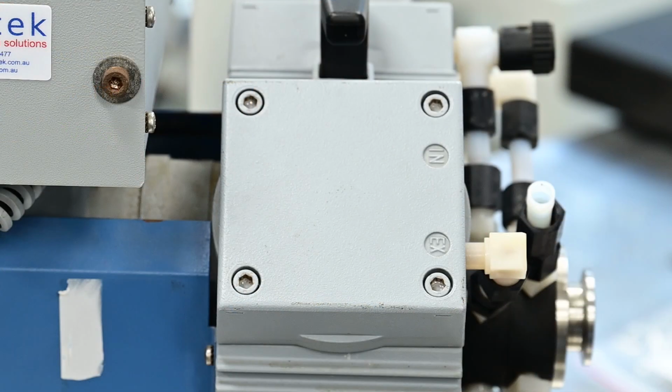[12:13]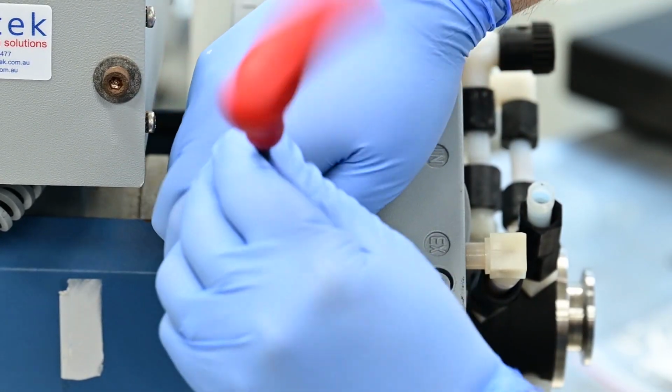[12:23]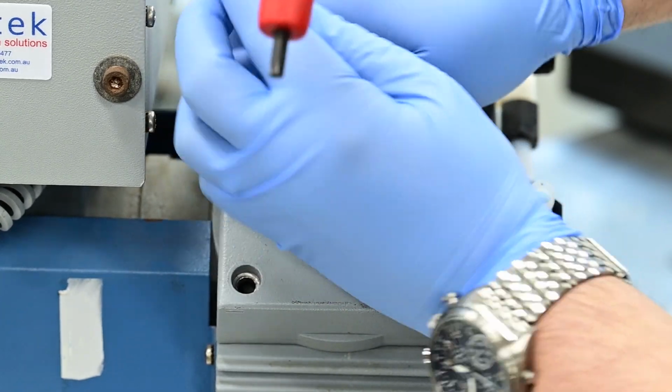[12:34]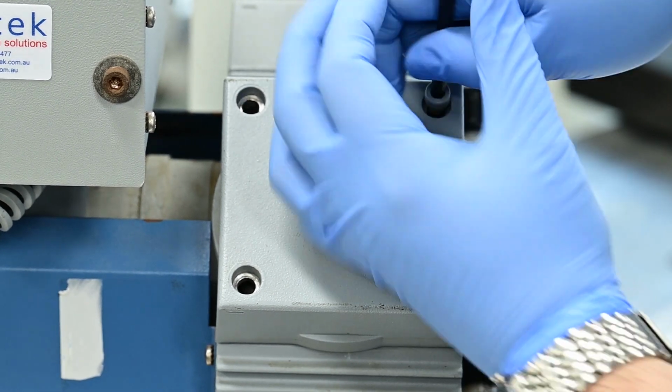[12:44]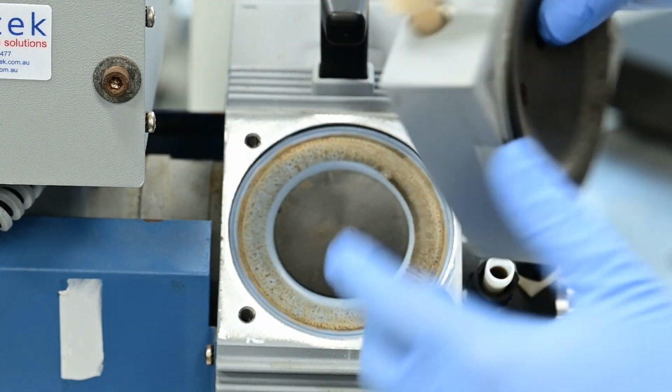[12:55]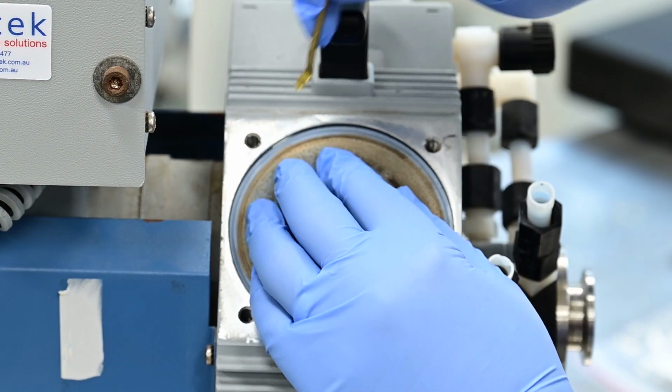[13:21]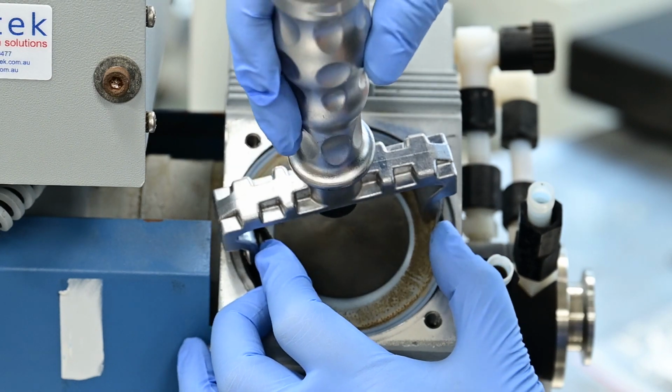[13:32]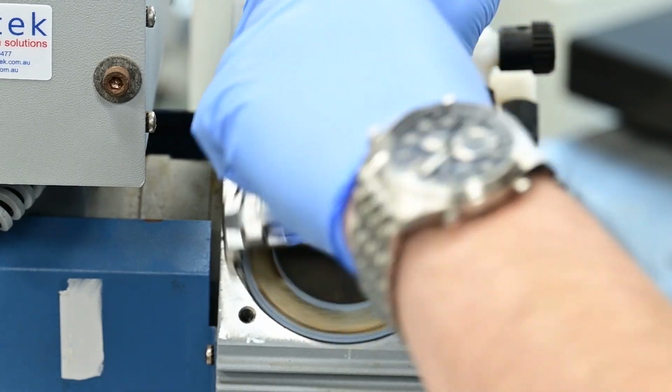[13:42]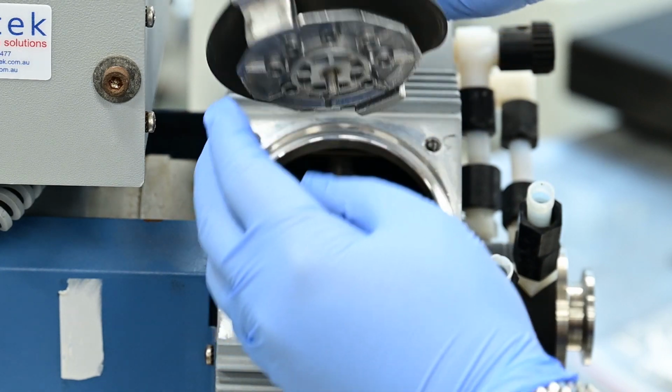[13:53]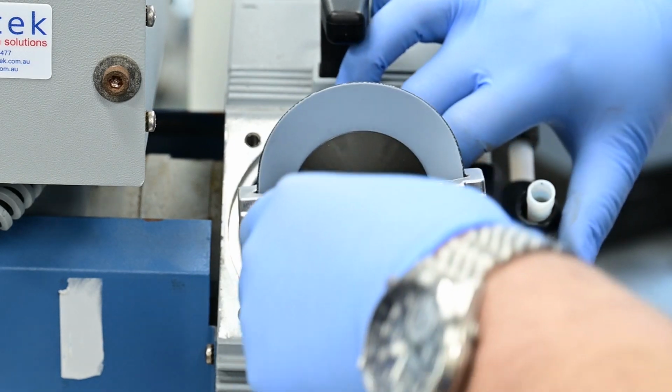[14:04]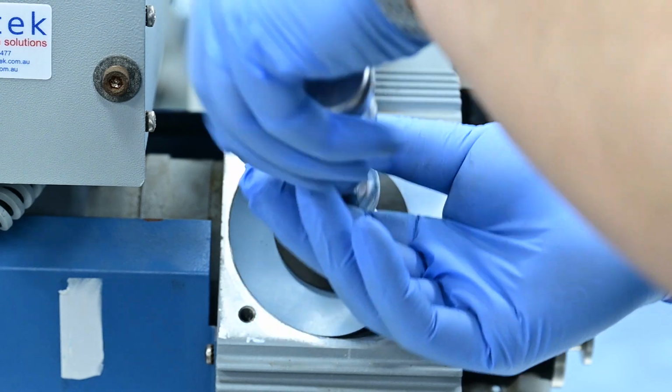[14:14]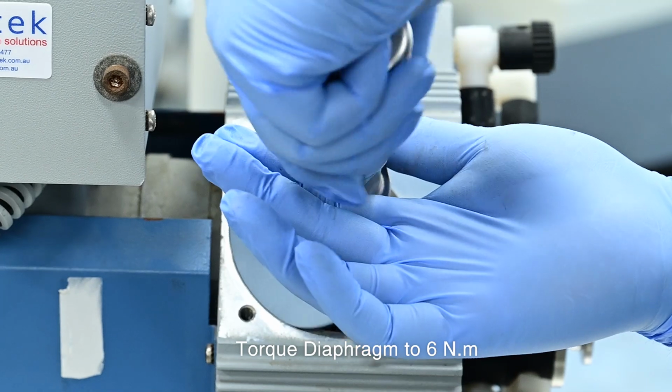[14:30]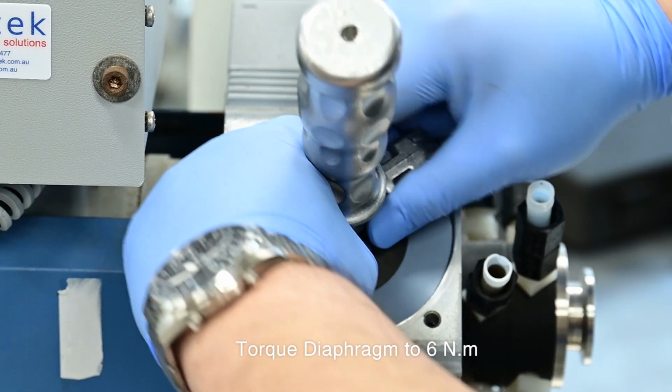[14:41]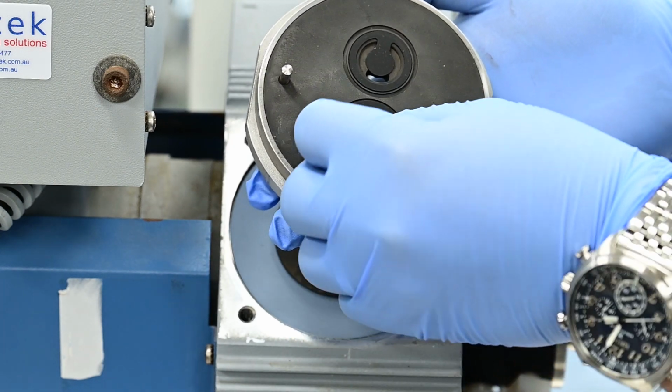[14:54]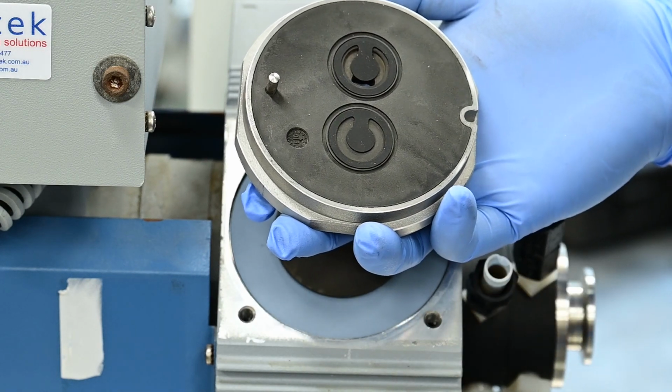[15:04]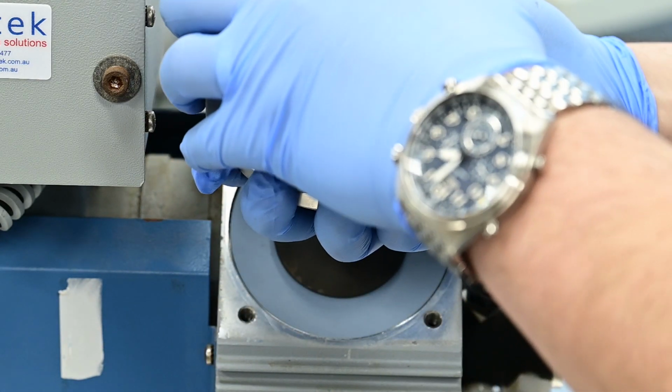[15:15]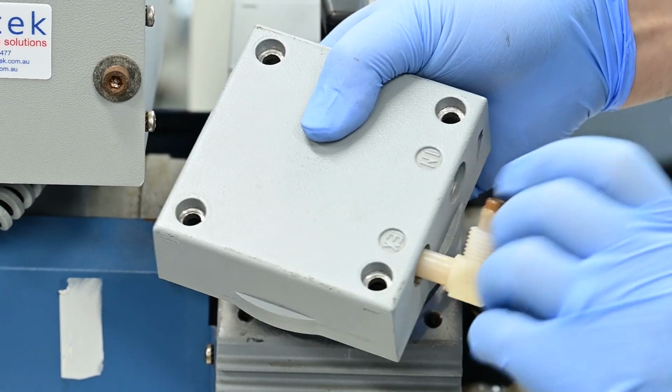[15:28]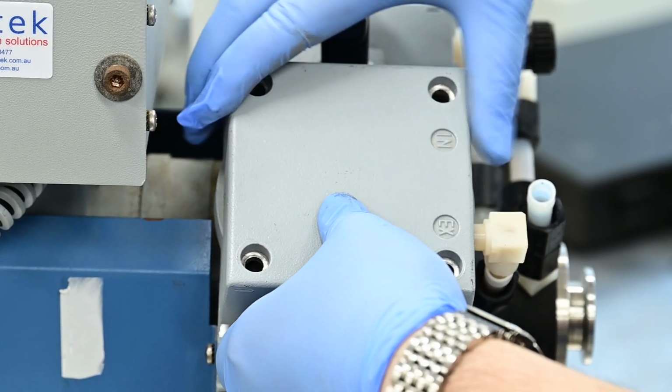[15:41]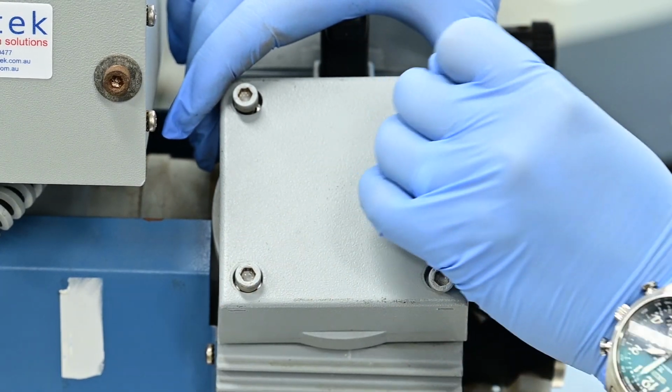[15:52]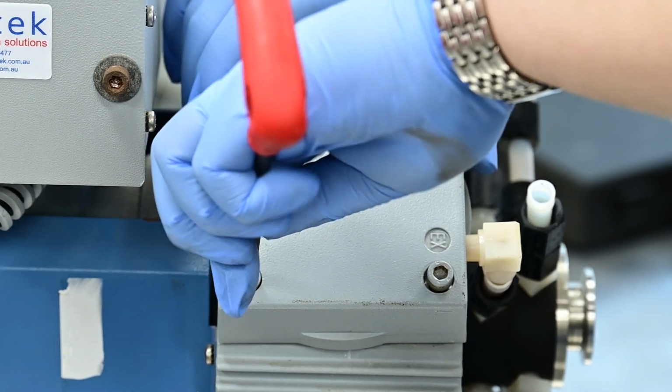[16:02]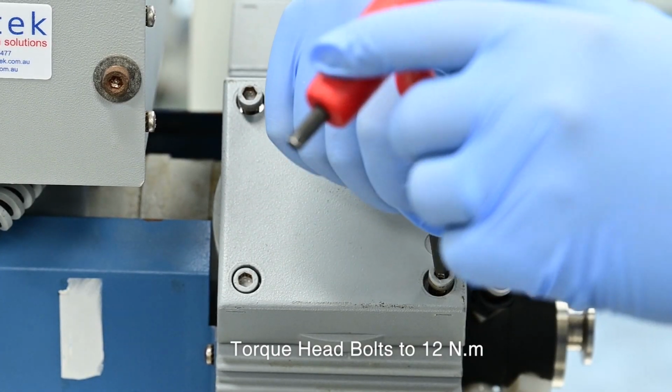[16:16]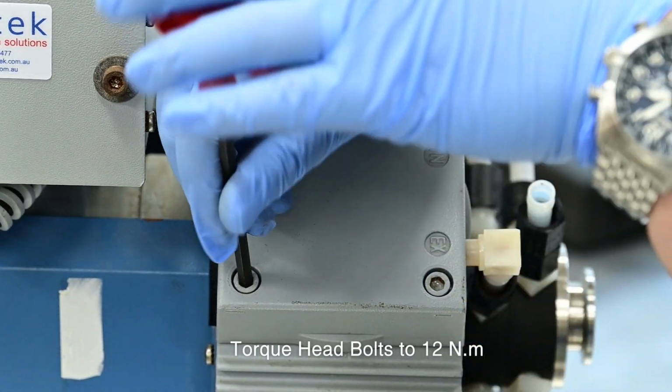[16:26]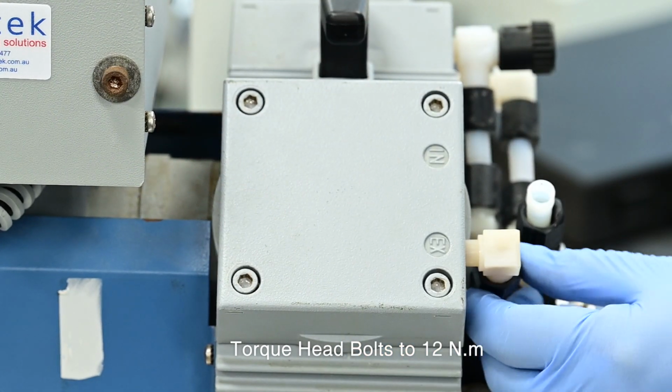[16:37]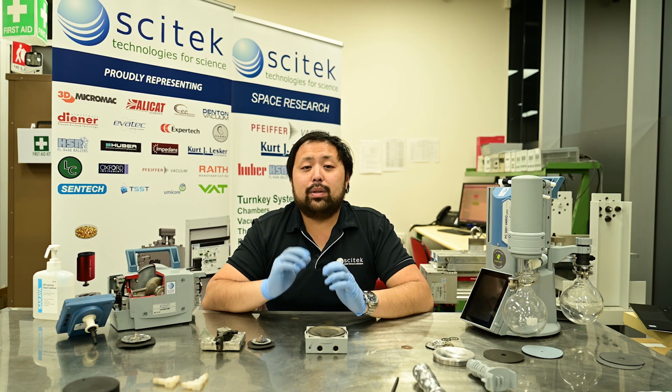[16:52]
Now, once you've got one head completed, it's always tempting to just move on to the next head so that you can get the pump finished. But I find it's actually best to test the pump one head at a time. That way you know that if one of your valves has been put on the wrong way or it's slipped out, that you can address it straight away. If you do your entire pump, particularly if it's a pump with eight heads or four heads, then you'll need to go back through each stage to try to determine which stage is the one that's causing you the issues.
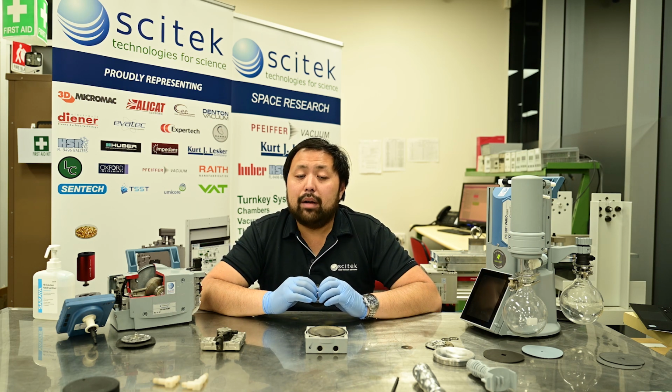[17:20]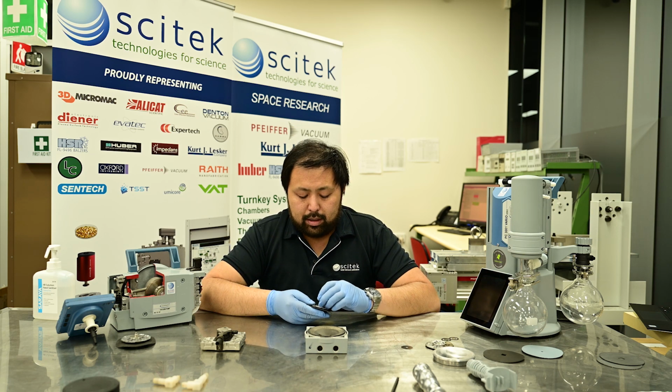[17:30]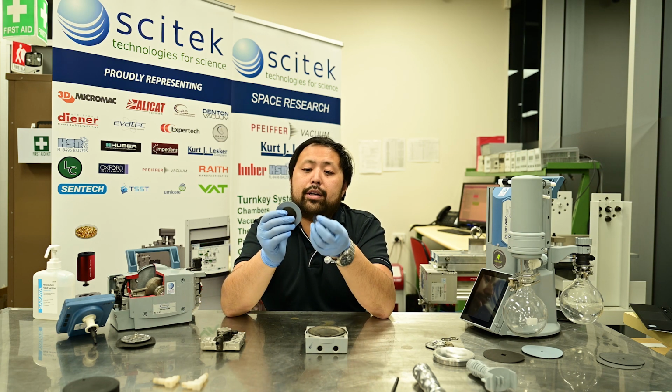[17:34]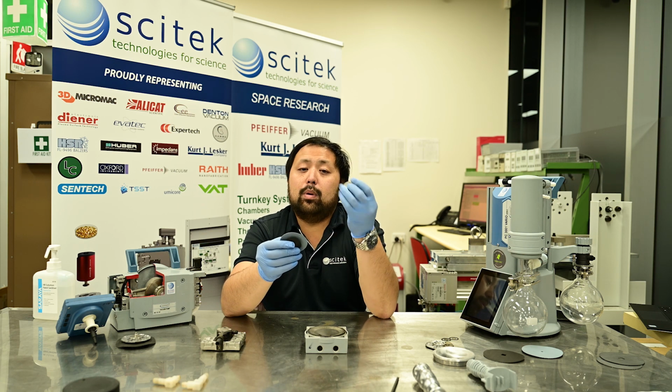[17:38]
Now, occasionally, after you service a pump, you can encounter two issues. One, the ultimate vacuum just doesn't seem to get better no matter what you do, and that can possibly be caused by an incorrect spacing of the shims. Occasionally, because of variations in tolerance, you may need to add more shims in order to achieve ultimate vacuum.
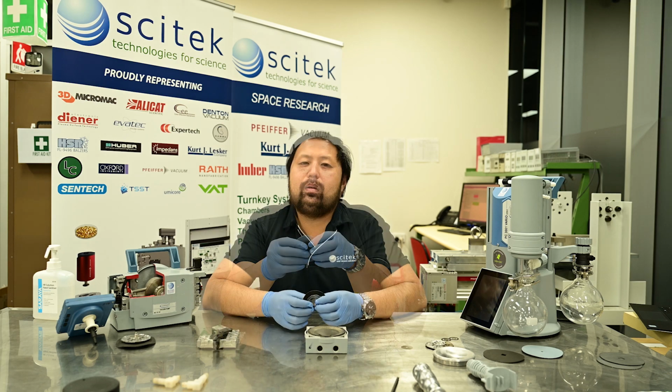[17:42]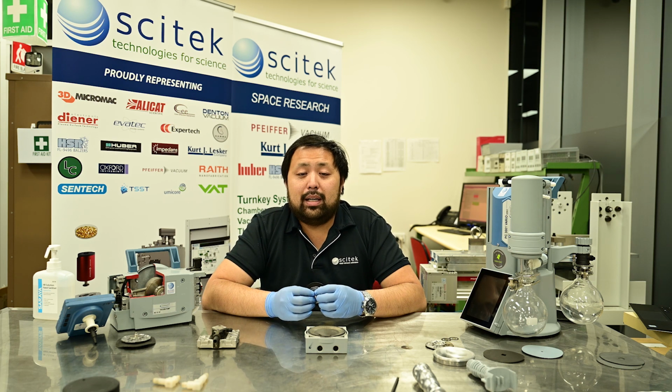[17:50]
Another issue that people sometimes find after servicing their diaphragm pump is that it walks all over the table by itself. And this is caused by head knock, where the diaphragm is actually making physical contact with the head and causing excessive vibration. What needs to happen there is that we need to identify which head is responsible for the vibration and then remove some spacers in order to stop the diaphragm from hitting the head. Now that brings us to the end of this video.
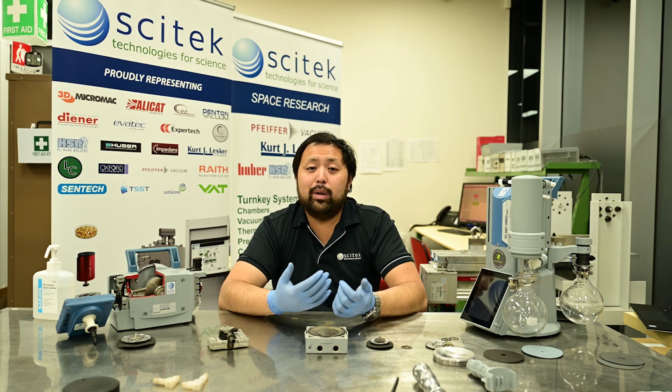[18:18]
I hope it's been informative and that you can now see that servicing a diaphragm pump isn't particularly complex. It just takes some time and some patience to make sure that you go through each of the steps very carefully.